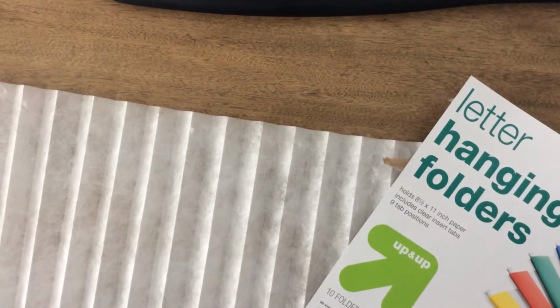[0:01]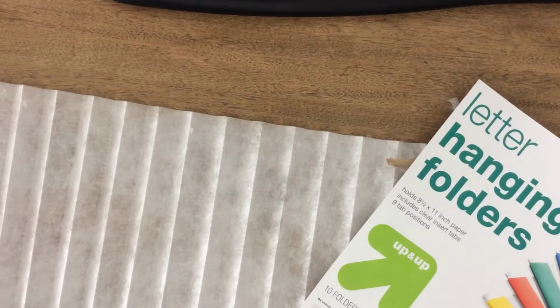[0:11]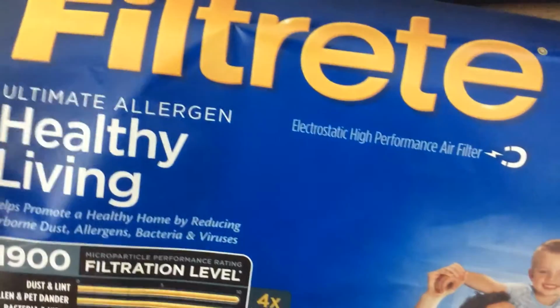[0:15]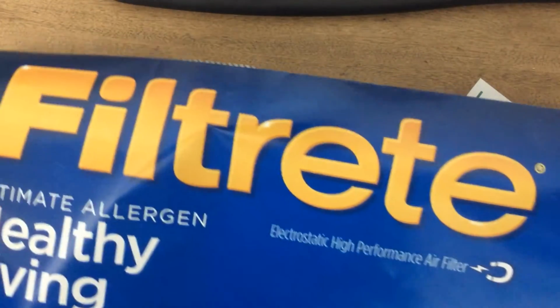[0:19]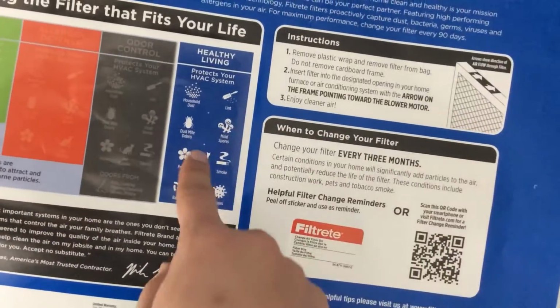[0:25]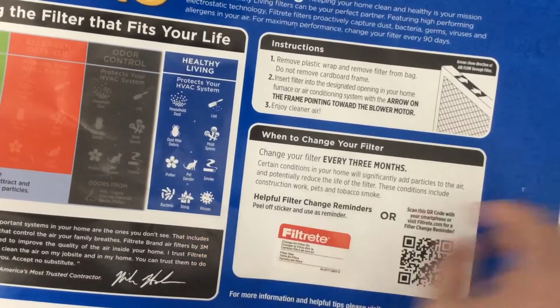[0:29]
I'm going to be teaching you how to make an N95 mask made from 3M's Filtrete filters. These are the same filters that 3M uses for air conditioning, that also takes care of bacteria, smog, viruses in particular.
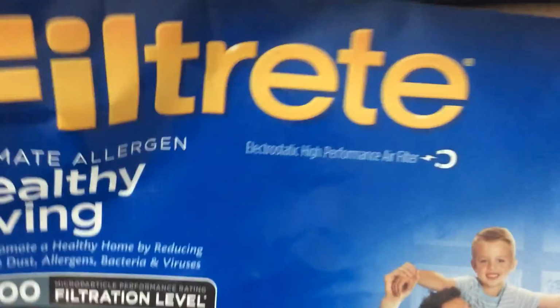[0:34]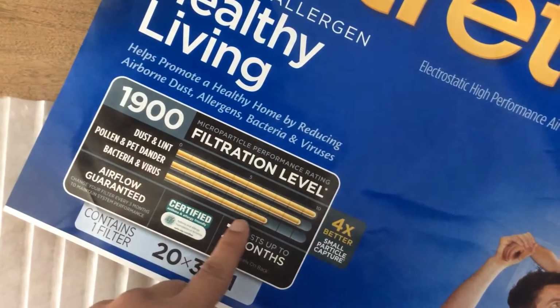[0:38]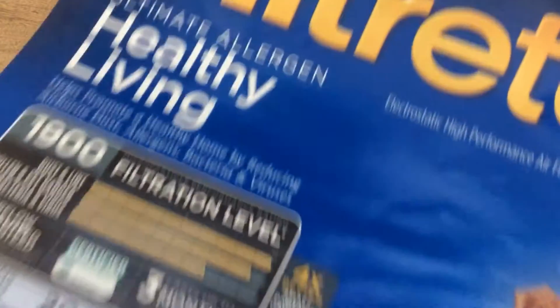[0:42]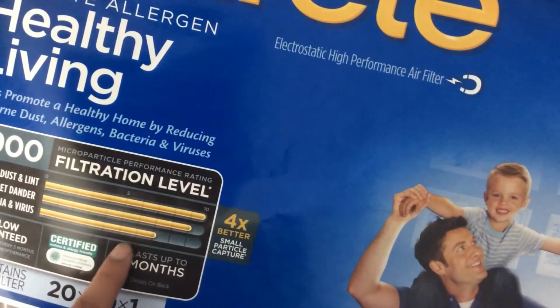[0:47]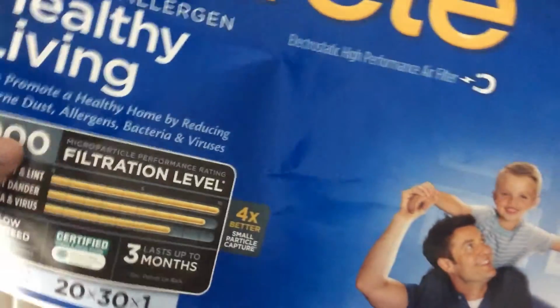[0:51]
Now, make sure that you get the 1900. Okay, so it's the highest filtration level that I could find. There might be higher than this level here. If you could find that, that's great.
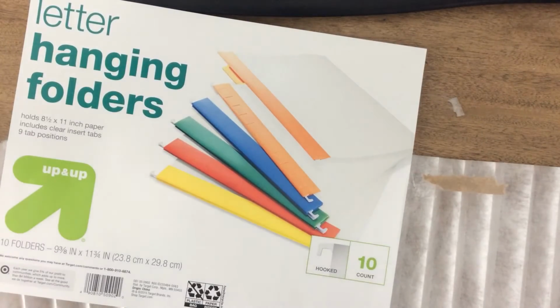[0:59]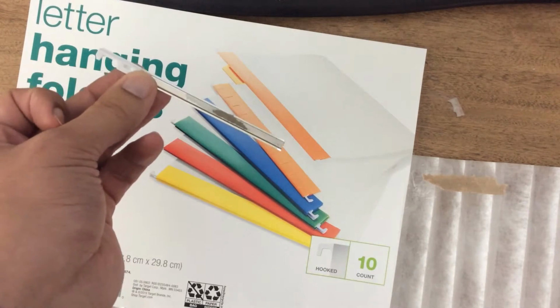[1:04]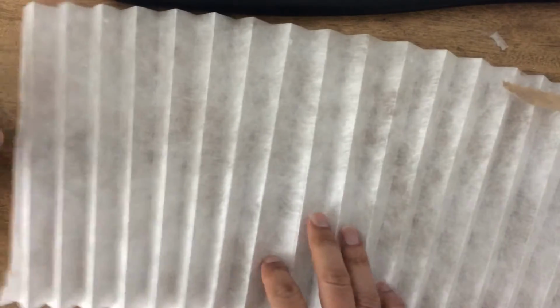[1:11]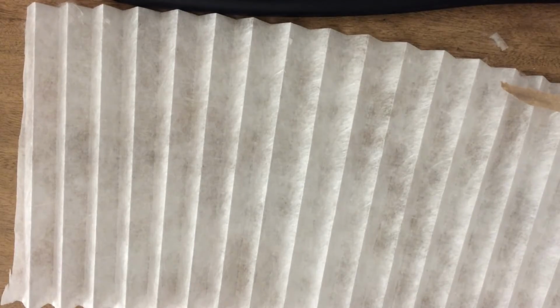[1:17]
You're also going to be using one of these letter hanging folders, and you're going to take the top aspect of the letter hanging folder and use it as the bridge for your nose. So I already took this off of the chicken wire apparatus, and this is how the chicken wire kind of looks, but it's very simple. You can just peel it right off just like so, and it's not too bad.
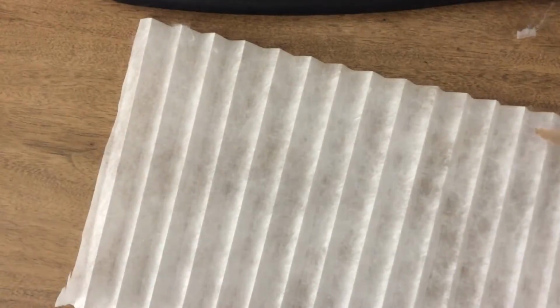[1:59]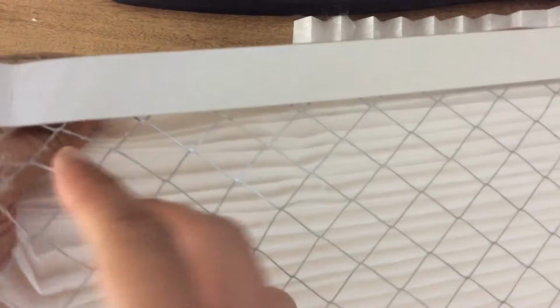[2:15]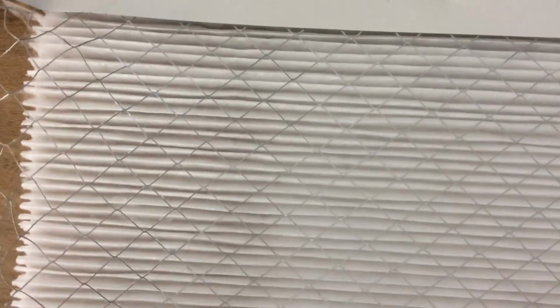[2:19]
The only spots where you can cut yourself is at the edges, but otherwise if you just take this thing off, you can take the whole line of chicken wire off just by pulling. And you have to do it on both sides, just to remind you, so just be careful when you're taking this apart to take out both sides. And you'll see also on this aspect here, it's a simple removal. You have access to this fabric, and you can make a lot of masks from this. Basically, you'll need three rows you can use to make masks, since it's 9 inches across.
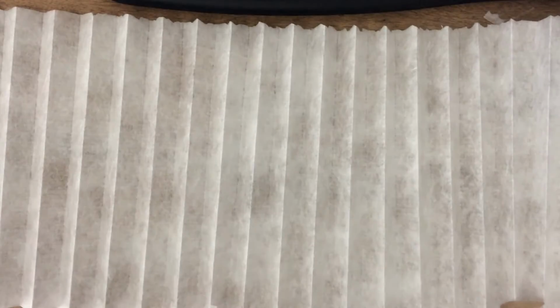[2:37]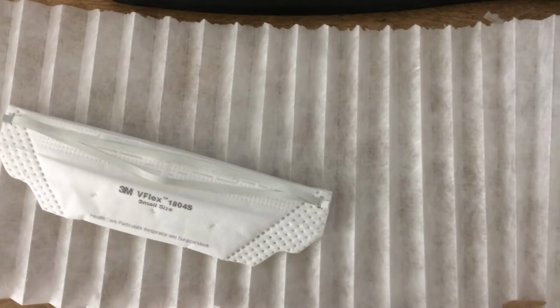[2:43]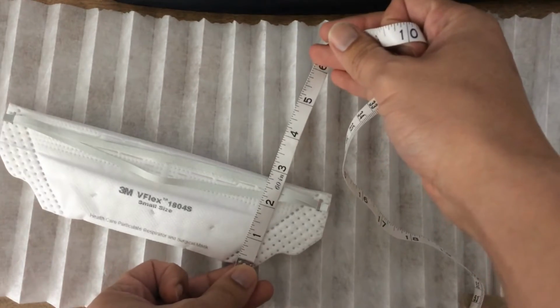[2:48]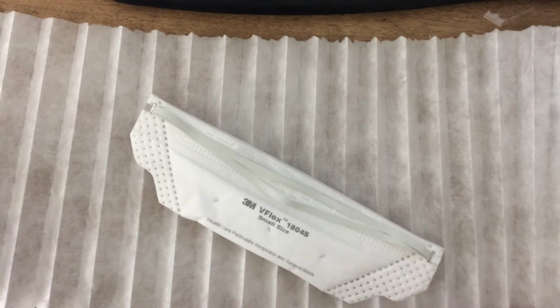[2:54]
Okay. So for the sake of time, I already have this cut out for us. You are going to measure, based upon the 3M N95 mask, 9 inches by about 3 inches, a little bit less than that. But to make our mask, we're going to need to do four folds. So it's going to be folding once in half and then folding again in half. So quarter folds.
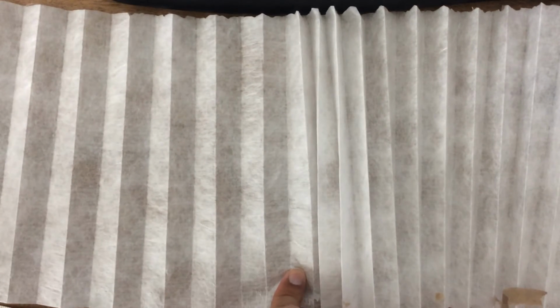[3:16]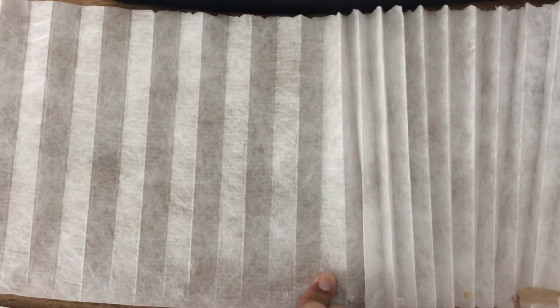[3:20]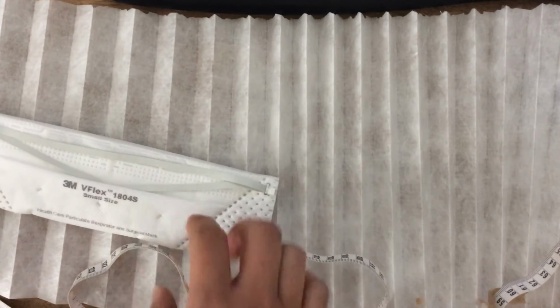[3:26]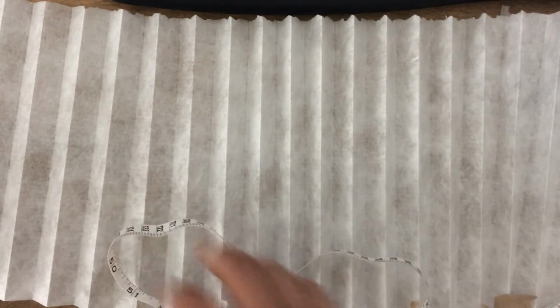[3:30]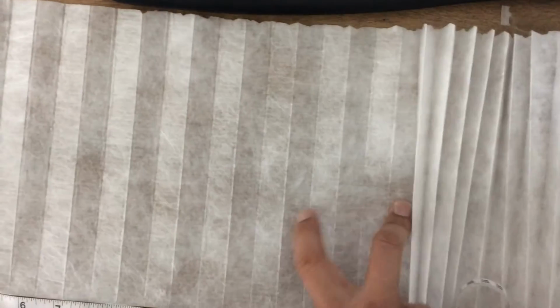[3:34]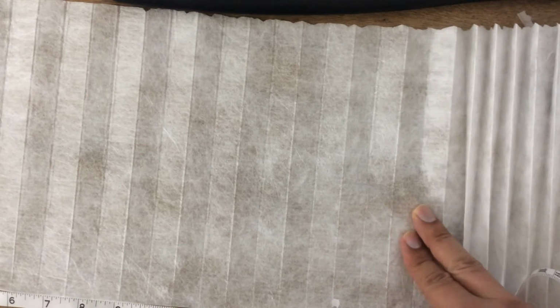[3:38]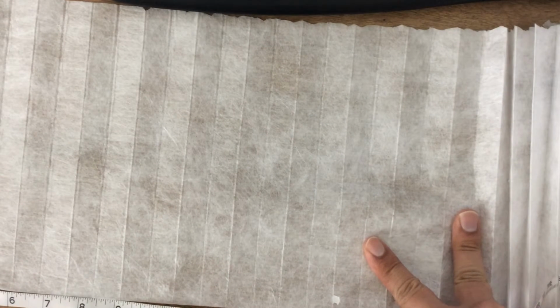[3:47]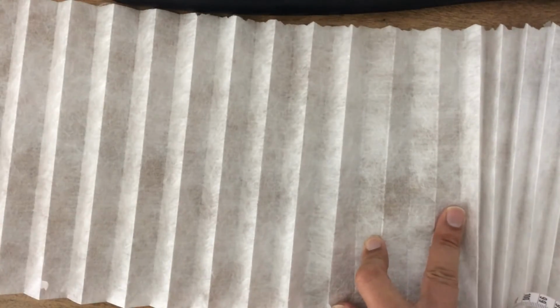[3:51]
So this aspect, since it's 3, 3 times 4 is 12, right? But we're going to need a little bit more for some redundancy, since there is a fold here on both sides. So it's 12 inches. It's right here, but we're going to go to about, let's do 16. Okay, you get 16 inches. That's good enough for you. So this is 16 here, and I'm going to cut.
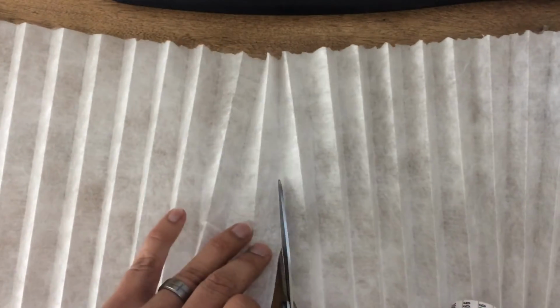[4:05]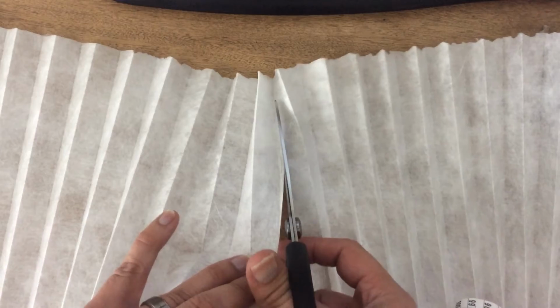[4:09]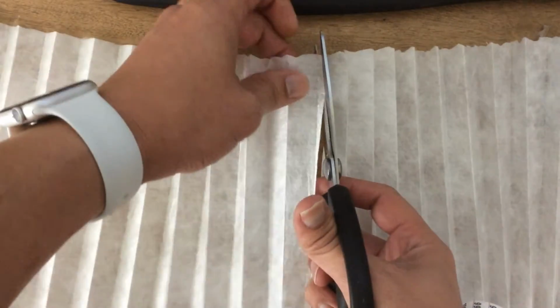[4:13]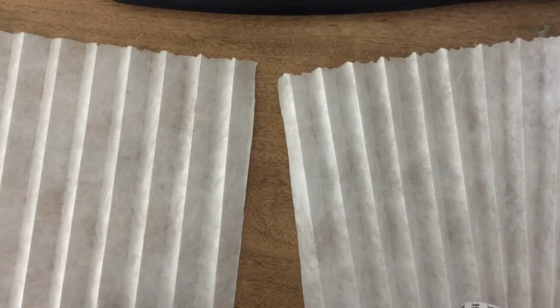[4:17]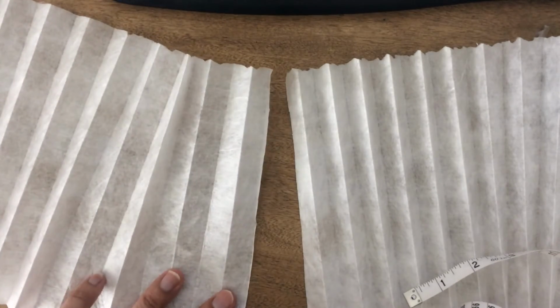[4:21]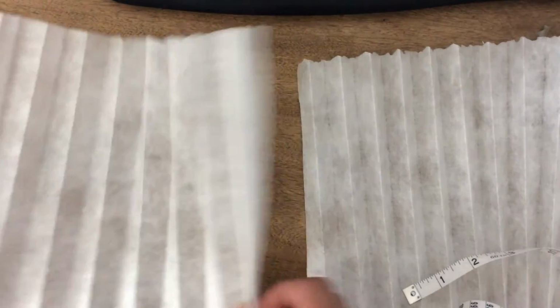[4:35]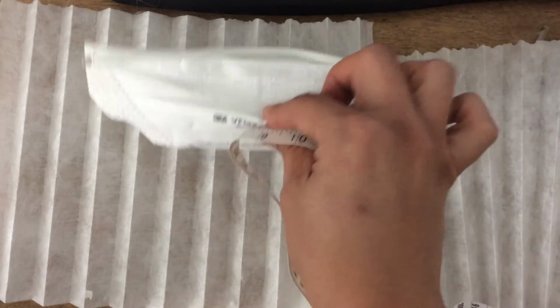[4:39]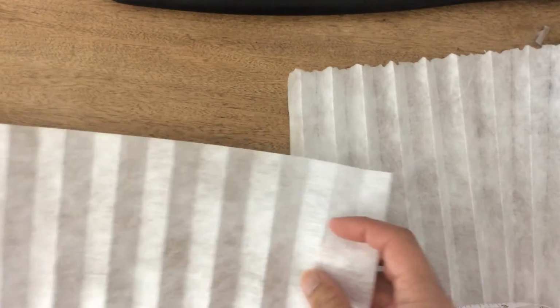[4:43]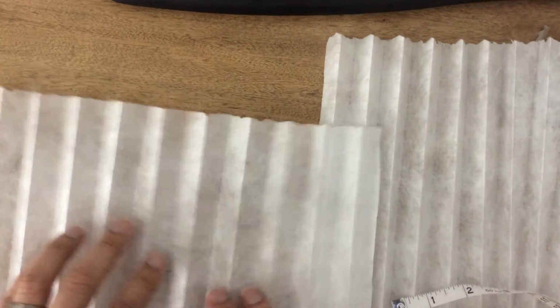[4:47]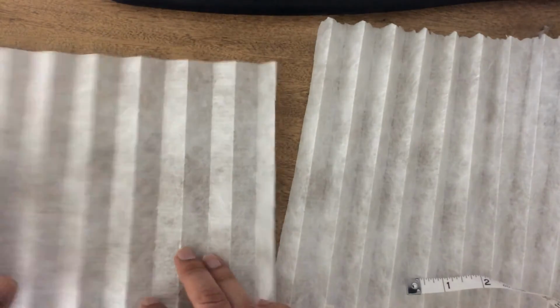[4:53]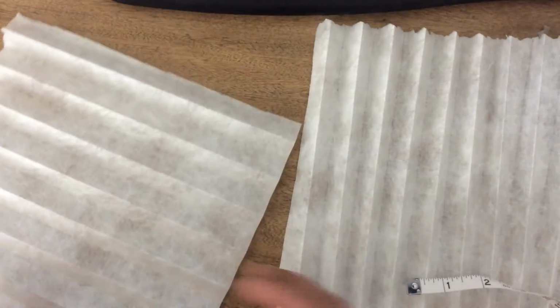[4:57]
Now, I was watching on the news about 3M not selling their masks from their distributors to Florida, to reduce our dependence upon foreign manufacturers or different places. It's best to take control of the situation by just using the same materials, and they've already given us a rubric here. Very simple. So there are 2 sides of the filter for directionality. There is a filtery or fabricy side, and there is a more smooth side. You want to use the smooth side as the one that's facing out.
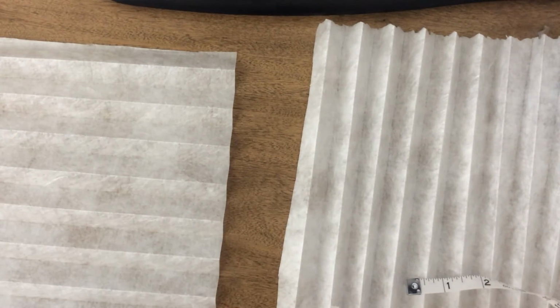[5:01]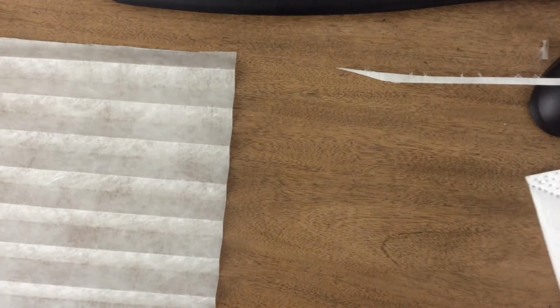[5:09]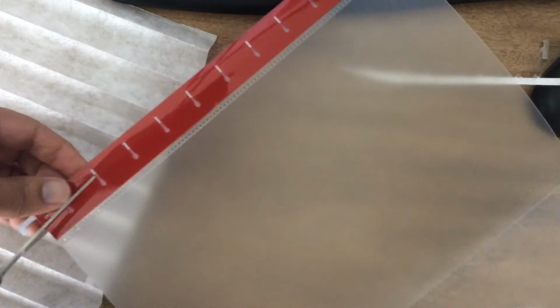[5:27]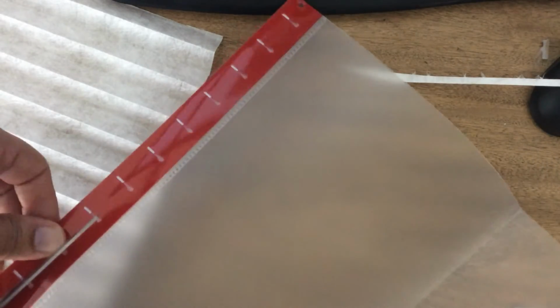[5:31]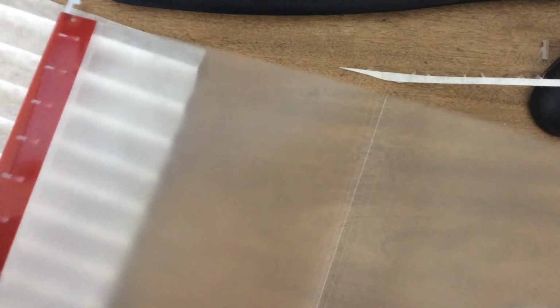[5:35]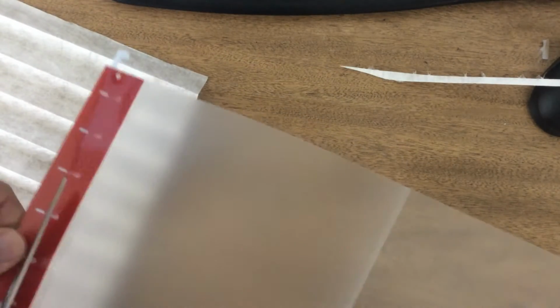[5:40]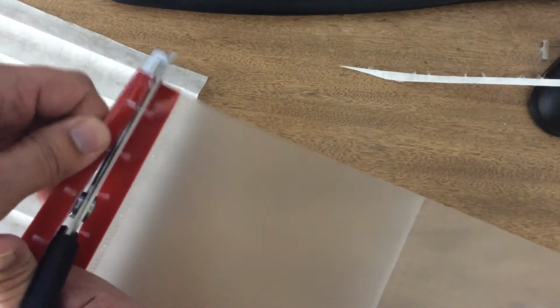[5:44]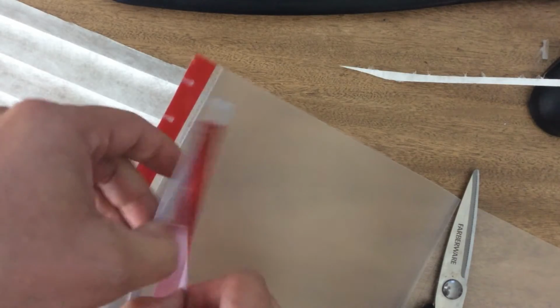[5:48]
Okay. So when you have this, you're also going to need a top aspect, a metal aspect. So like I said, we take a holder just like this and just cut right through it. Just cut right through this on the outside of it to get access to the hanging metal, which is the only flat aspect that you can find in the house, or somewhere you could find laying around.
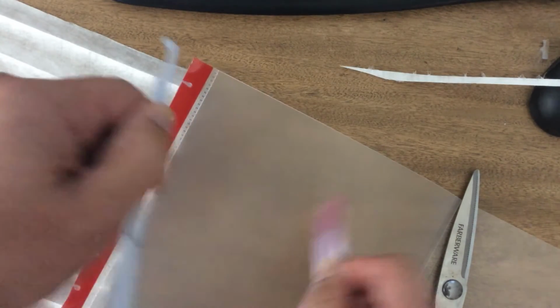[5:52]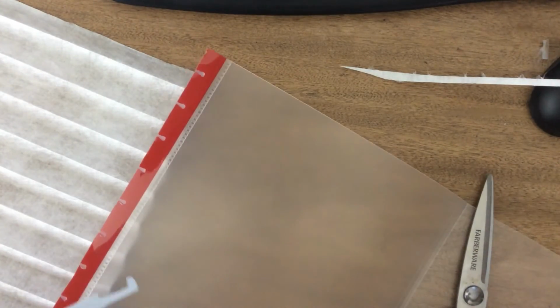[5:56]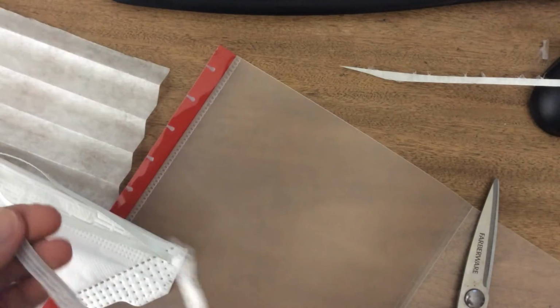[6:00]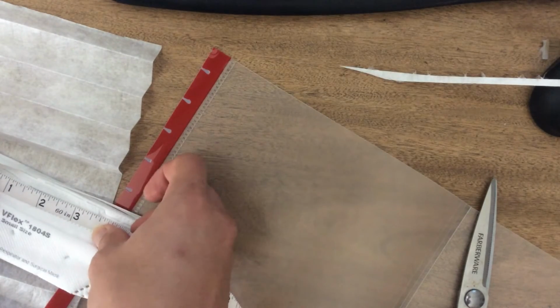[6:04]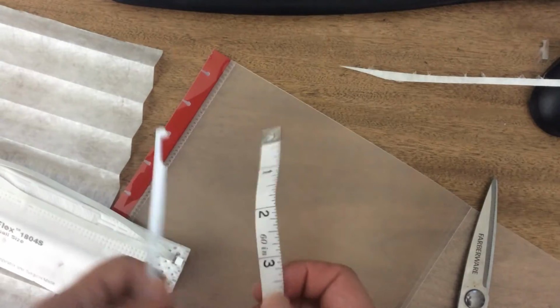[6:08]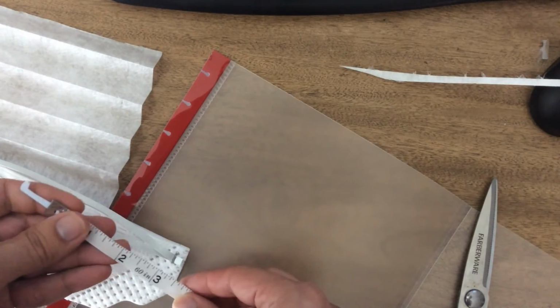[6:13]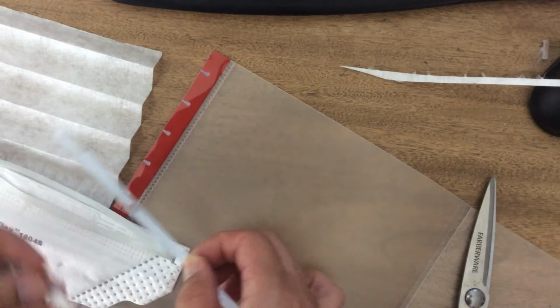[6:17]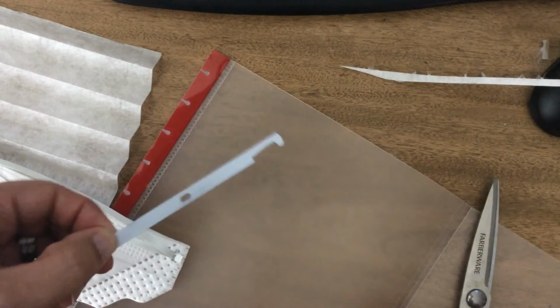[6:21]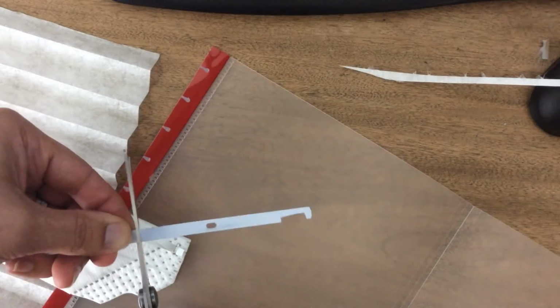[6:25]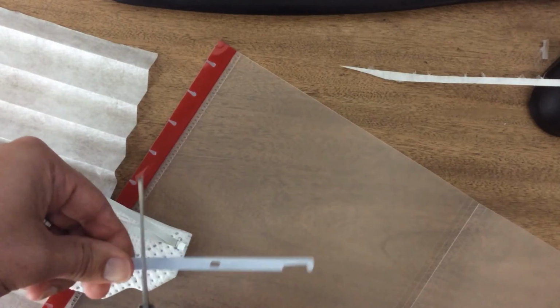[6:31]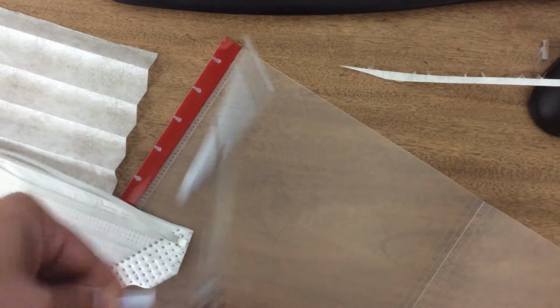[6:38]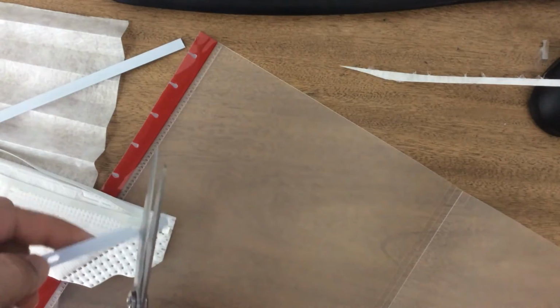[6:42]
And this aspect here, according to 3M's designations, is about 3.5 to 4 inches, so 3.5 inches. So what I'll do is I'll just go through here to about this aspect here and make my cut. I make my cut just right there. Try to round it too, best you can. Now watch your fingers too, just be careful. And same thing on the opposite side. Do your best to round it.
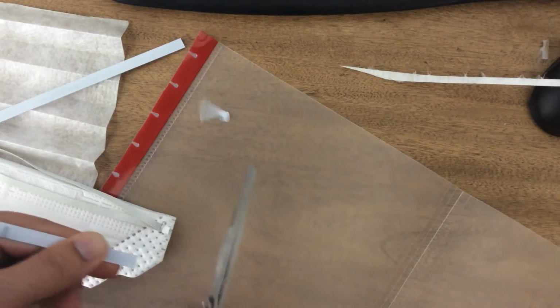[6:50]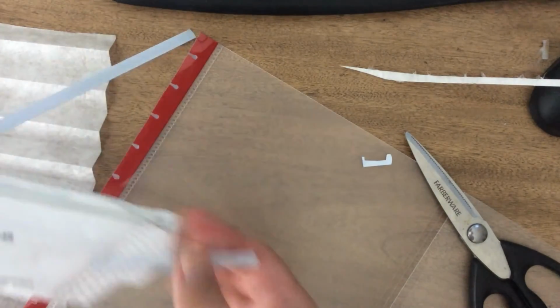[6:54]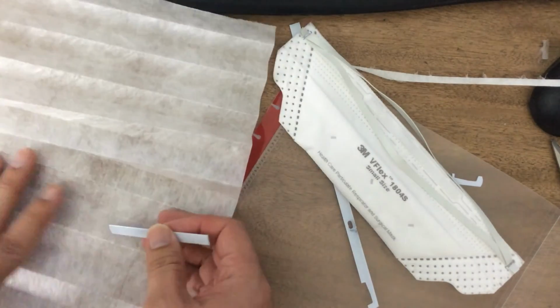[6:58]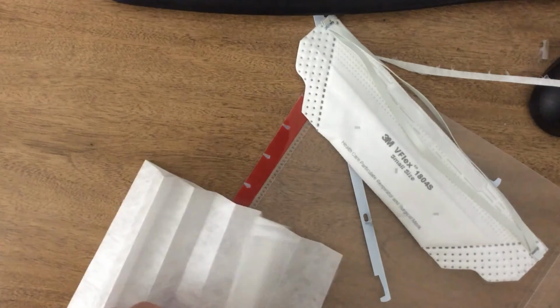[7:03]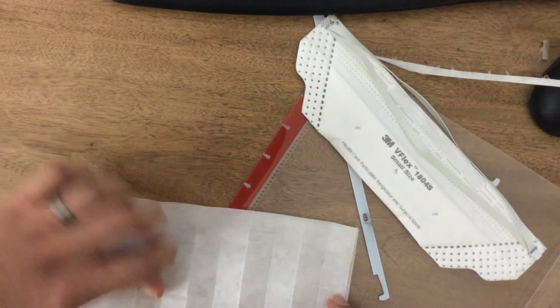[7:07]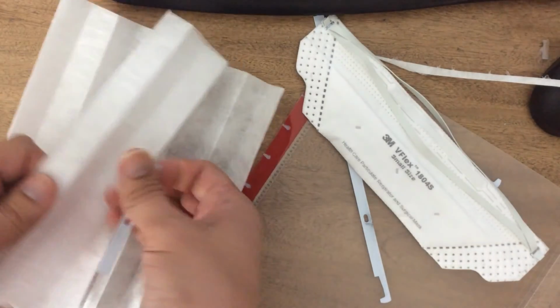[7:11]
Okay, so now we have our metal aspect. We've got our fabric towards the middle, and we know that we're going to double this up at least once. So you double it up once. You stick your metal in the spot where you know it's going to be.